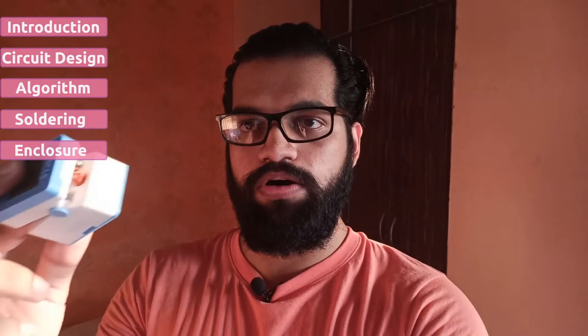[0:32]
In this video, we will see how an oximeter can be made. I have made an oximeter here. It has a display. It has a battery compartment. It has a standard oximeter.
In this video, I will discuss how it can be made. I will discuss the whole process: the circuit design, how you can create an enclosure, and how the algorithm works.
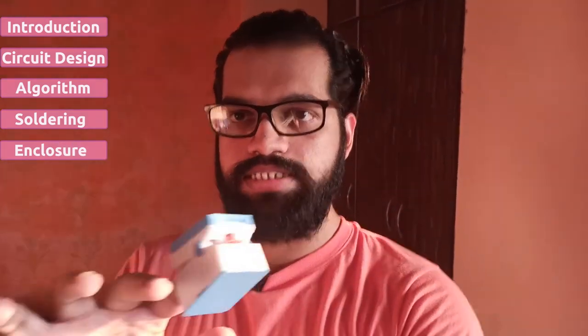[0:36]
In this design, I have not used any specific sensor. The oximeter sensor is just a photodiode. After that, there are stages. The signal will be cleaned and amplified.
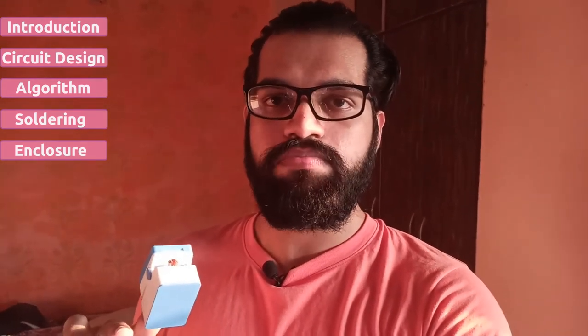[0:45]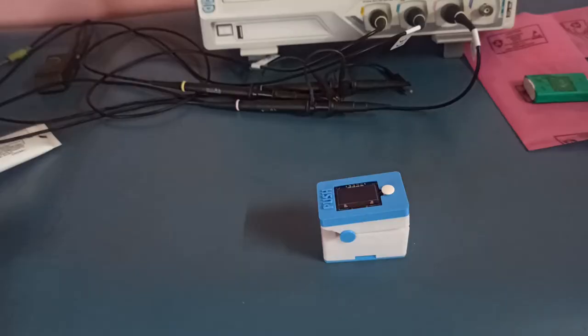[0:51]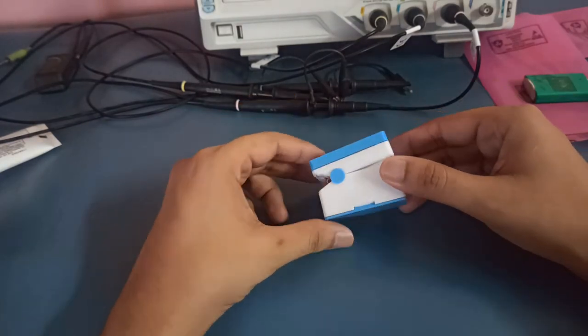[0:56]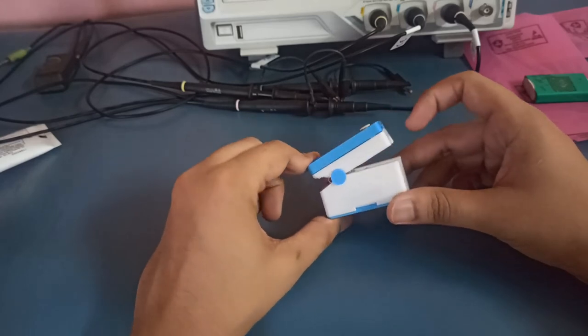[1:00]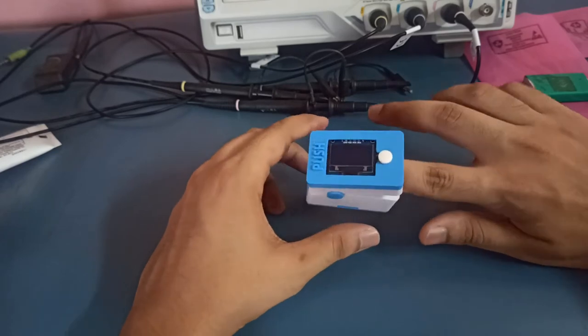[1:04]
Before I move on, I will show you a demo of how the device works. First of all, I will insert my finger. There is a small spring mechanism. I will insert my finger inside.
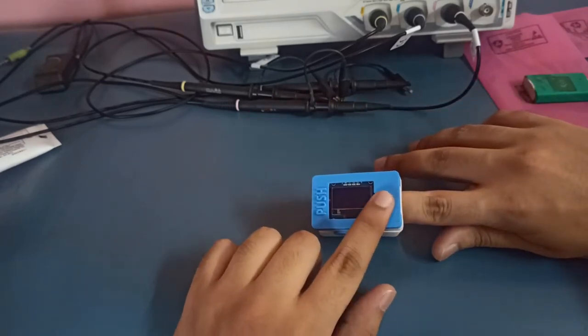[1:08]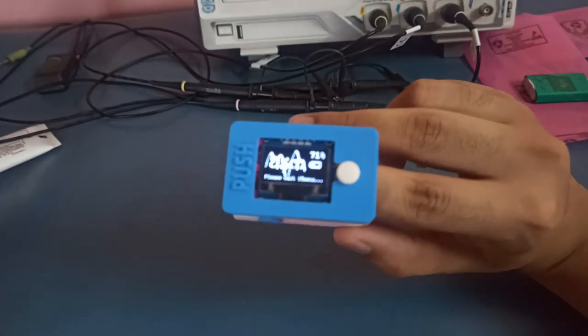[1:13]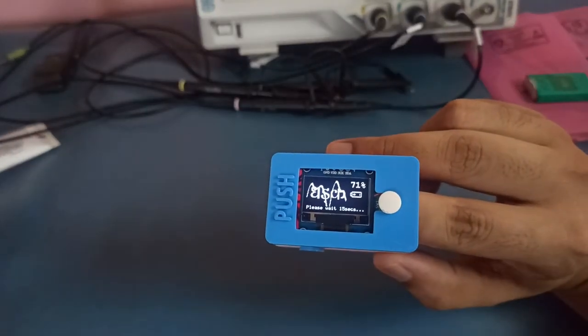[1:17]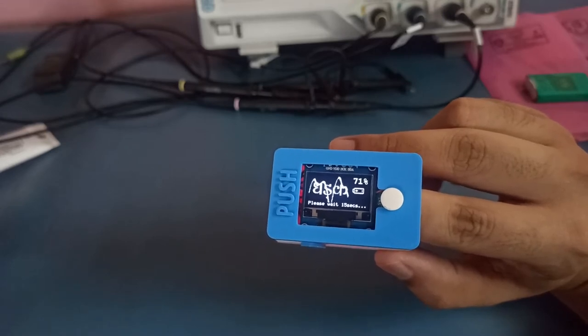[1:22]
Now I will press the power button. First of all, you can see the project name. The project name is Dharak. The battery percentage is 71%. Below there is a message, because it will take a value in 10-15 seconds.
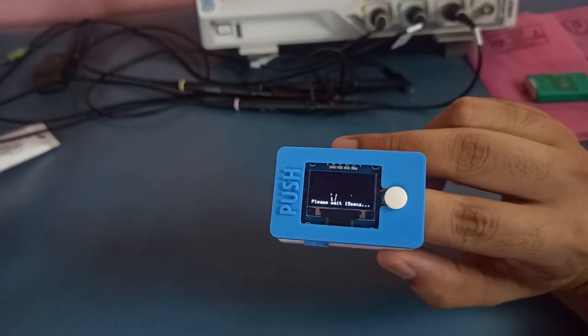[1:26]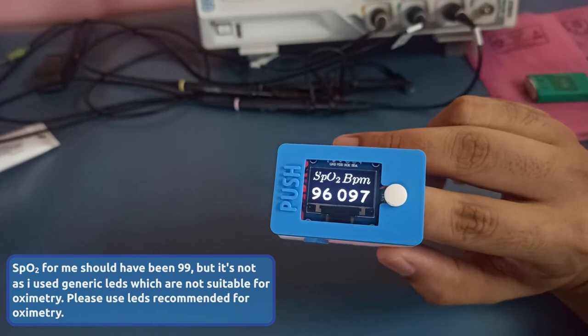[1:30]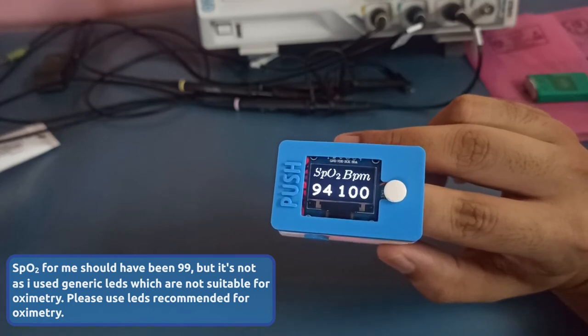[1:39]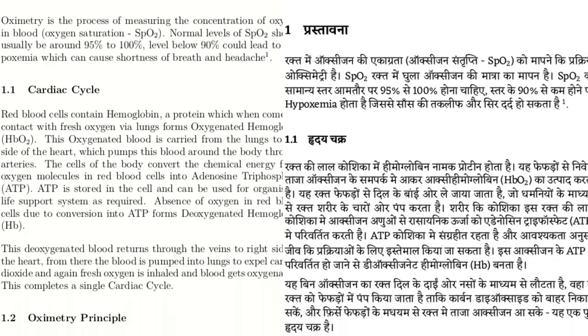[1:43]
First of all, I will adjust the LED to my finger. So, these values have come to us: SpO2 and BPM. As you can see. I will also prepare the whole documentation of this project.
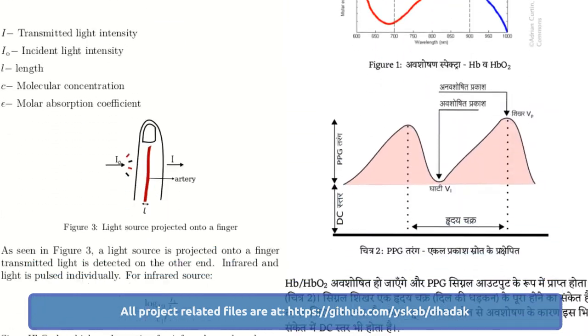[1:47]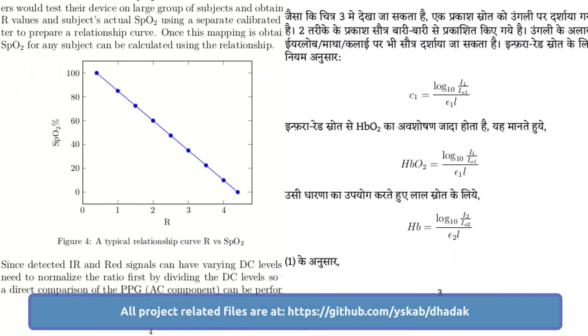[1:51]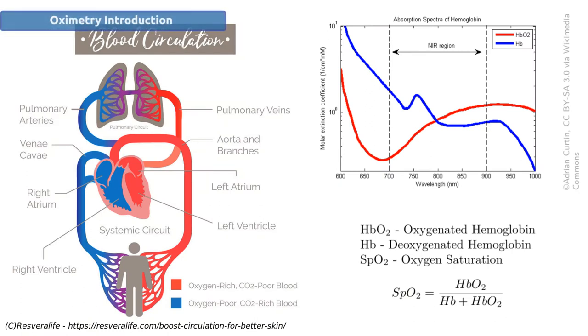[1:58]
Okay, let's start. First of all, I will give an introduction, an overview. What is happening in our body?
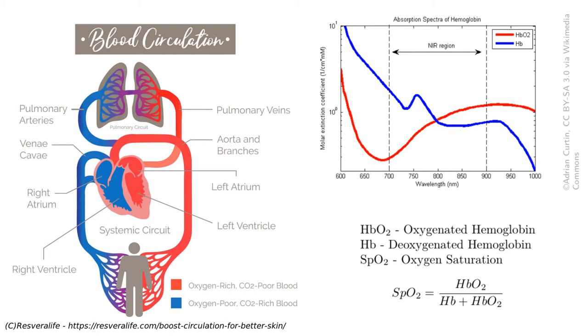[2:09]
In our body, we have a cardiac cycle, in the heart and lungs. What happens in this? We take in oxygen in the lungs. It will diffuse into the blood. It will become oxygenated hemoglobin, as the oxygen binds to it. The heart will pump it to the body.
So the body functions can use all the fresh blood. The oxygen is used by the body, so it will become deoxygenated hemoglobin, because the oxygen is gone from hemoglobin. So these are two processes in the cardiac cycle, in the heart and lungs.
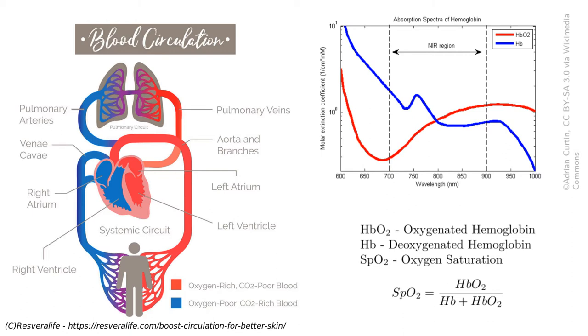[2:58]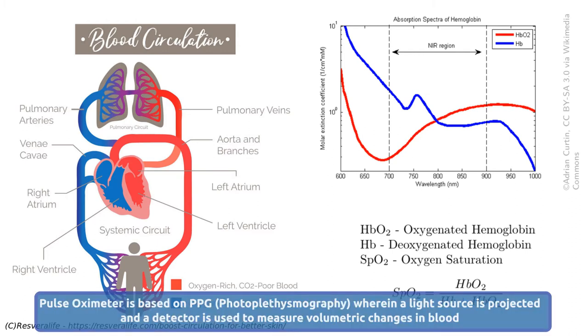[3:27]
So what is oxygen saturation? The oxygen saturation will simply be HbO2 divided by Hb plus HbO2, which means the oxygenated component divided by the total components. So this is how to measure it. The question is, how will we get it directly? These are concentrations, so they are not convenient. So there is a technique called photoplethysmography.
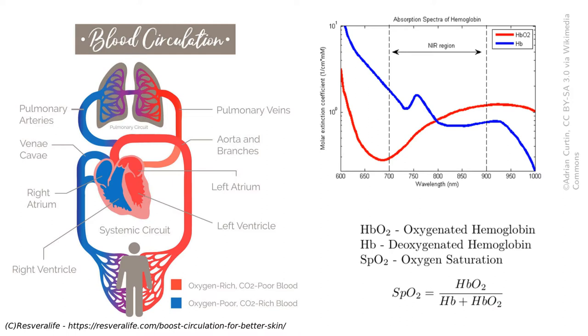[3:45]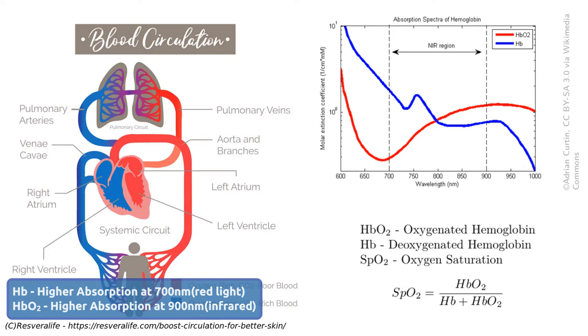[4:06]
What can be done? It can project a light source on a finger, and on the other side, we get a response. We have discovered that HbO2, oxygenated hemoglobin, absorbs more infrared wavelength. As you can see in the graph, the red color is the spectrum of HbO2. If I pass infrared wavelength, then I will get a little less output, because it will absorb it.
Similarly, red is about 700 nm. If I pass red light, then I will get a little less output, because it will absorb it. So now we have to know these two things. We can derive a relation from them, which we can relate to SpO2. That means we can measure only the intensity of the output.
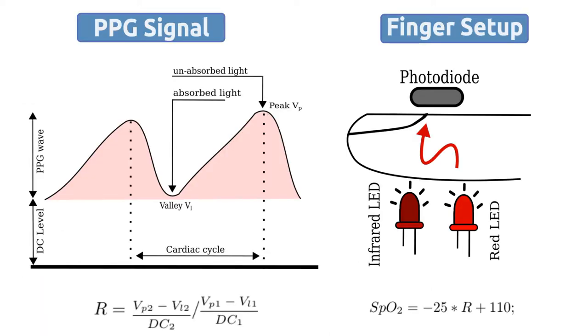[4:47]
I will show you the final relation. The whole derivation will be found in my document. The final result is this. You can see the PPG signal. This is like a mountain. There are some peak points and some valley points. Wherever the peak is, the intensity is not absorbed. It has passed. And wherever the valley comes, there is absorption. That's why the detected intensity of the output is less. When it comes out in the final form, the R is shown here. Basically, the peak and valley points are the ratio of red and infrared. The above component is red.
It is red. It is infrared. So in PPG signals, there is a little DC level. So we will include that in the formula so that we can normalize both. So the ratio is simply red intensity to infrared intensity.
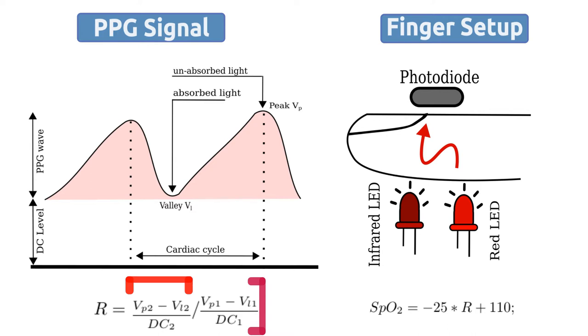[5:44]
And when we use the SpO2 to derive the formula, this is a typical relationship curve. So if we calculate the R and plug it here, then we will get the final SpO2.
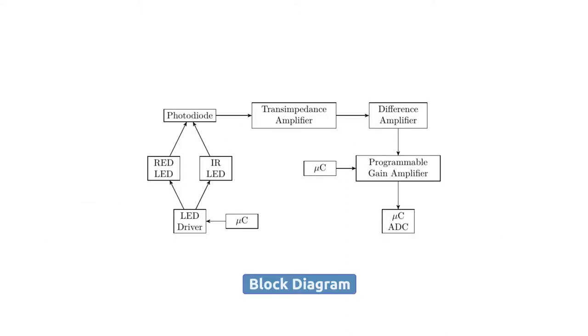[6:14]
And the finger setup, I have shown here diagrammatically. The LED will emit light from one side, and the other side will detect. And all this is detected with the photodiode, and the other side will be shown here. So we have seen the overview and formulas.
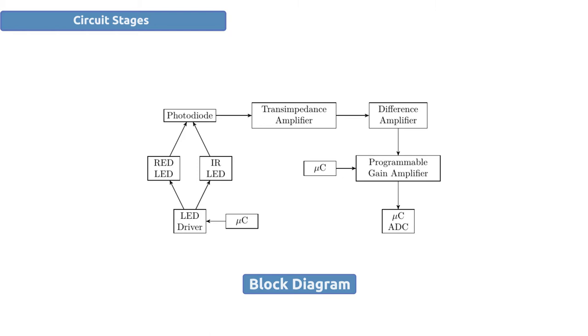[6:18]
Now let's talk about the circuit stages. So here we have a block diagram. This is the design block diagram. So if we start from the left, what is the microcontroller? It will instruct the LED driver circuit to set the intensity of the LED. So you set the appropriate voltage to the LED driver. The two red and infrared LEDs will be on.
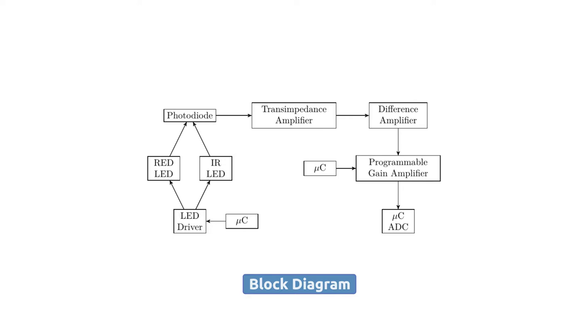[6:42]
The intensity of the LED driver will be set. Now the LED is on. The light will reach the other side, the right side. The photodiode will convert the light into current. And the current will be converted to voltage. It is called a Transimpedance amplifier.
When it is done, it will convert the current to voltage. Now it goes to a difference amplifier. I will discuss this later, but basically we need to remove the DC level from the signal. Once we remove the DC component, the AC component can be further amplified. That is the use and I will discuss that later.
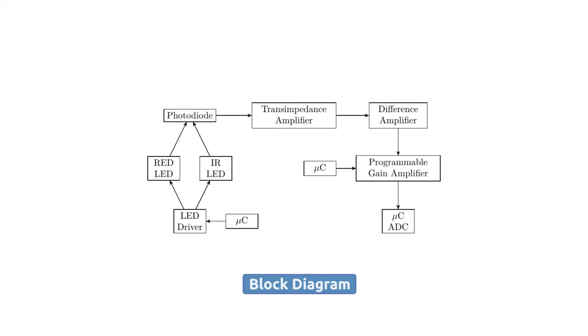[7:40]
Now we have an amplification stage, a Programmable Gain Amplifier. We can instruct the microcontroller to set which gain we need. The gain will be set and the AC component will be amplified. Finally, the ADC will read the digital signal. Then we will implement a formula in the microcontroller to calculate SpO2. This is the entire block diagram and design.
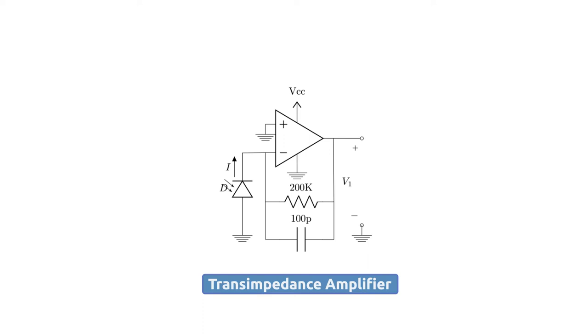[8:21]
Now let's look at individual stages. First of all, we have the Transimpedance Amplifier. First of all, we have the photodiode on the finger. The LEDs will shine light and the photodiode will convert the intensities to current. But we need a voltage instead of current, so we can read the voltage with the microcontroller and know how much its level is. I will discuss the purpose of this.
This is a simple op-amp in Transimpedance Configuration. This is simply the photodiode. Then there will be current. And the op-amp property is virtual ground. So the current flows through the 200k resistor. So the output is simply I times 200k. And that gives the voltage. And there is a capacitor that will work as a low-pass filter.
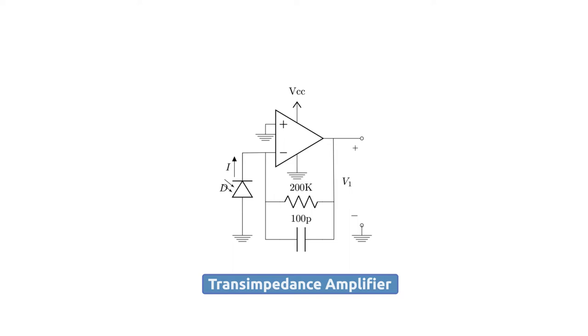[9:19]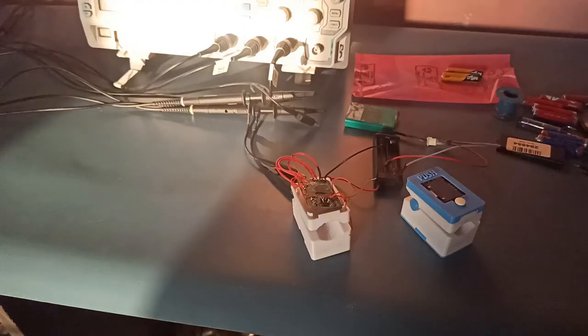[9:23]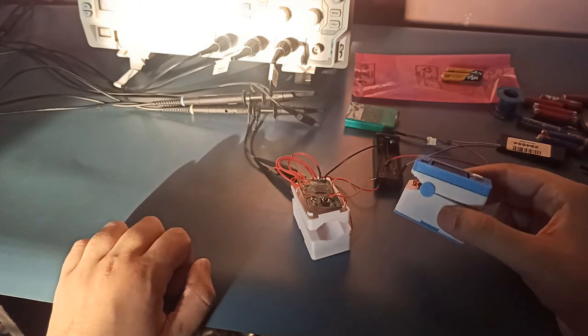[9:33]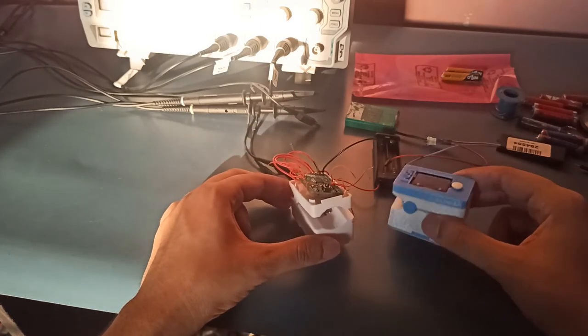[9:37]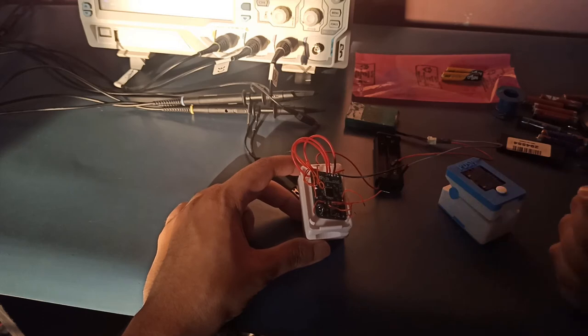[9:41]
So now let's look at the oscilloscope. So I am on the bench. Before we show the oscilloscope, I will show the test device. This is the final device. This is the completed version. And this is the test device. It is the same copy. Here I have removed wires so the traces can be easy to reach and easy for debugging.
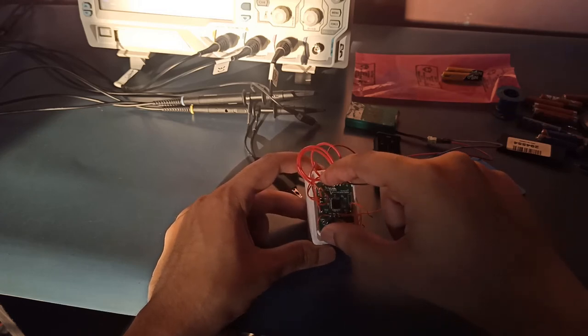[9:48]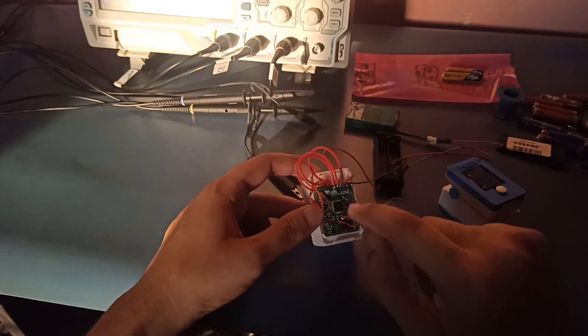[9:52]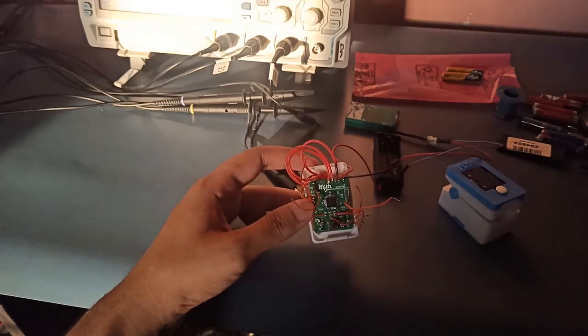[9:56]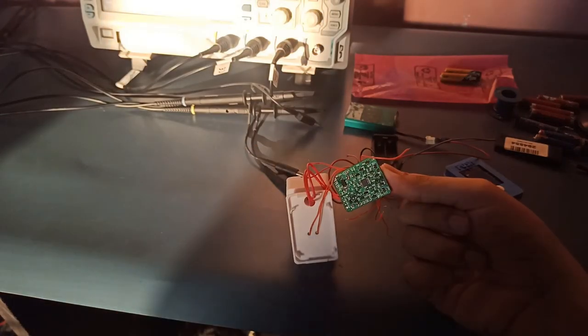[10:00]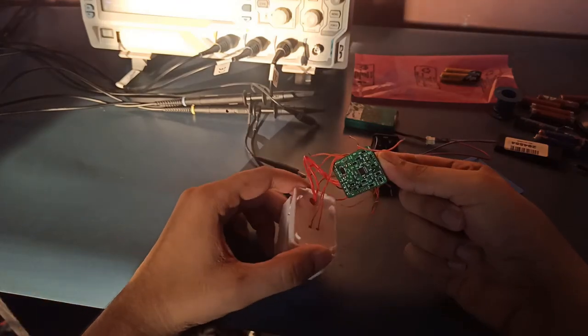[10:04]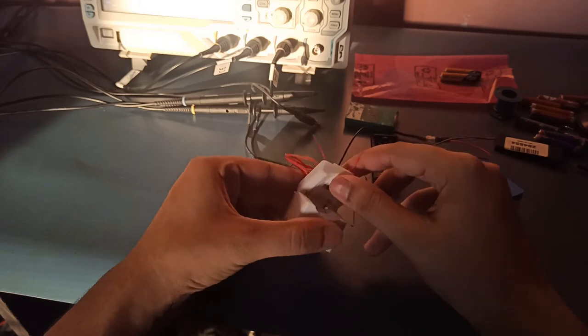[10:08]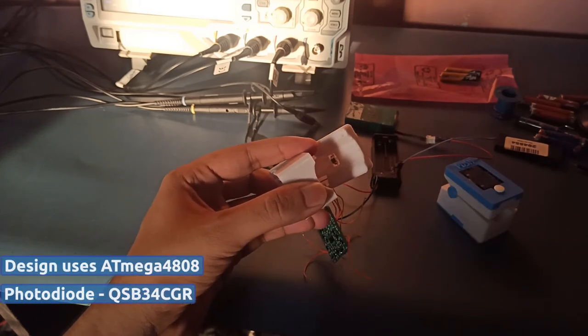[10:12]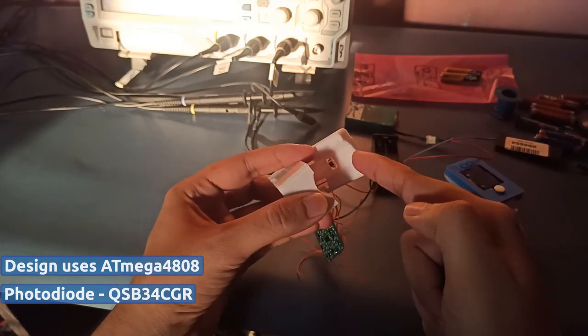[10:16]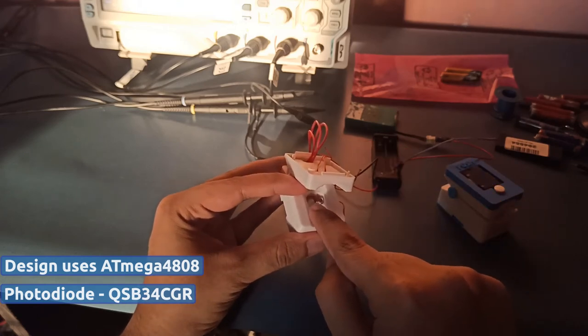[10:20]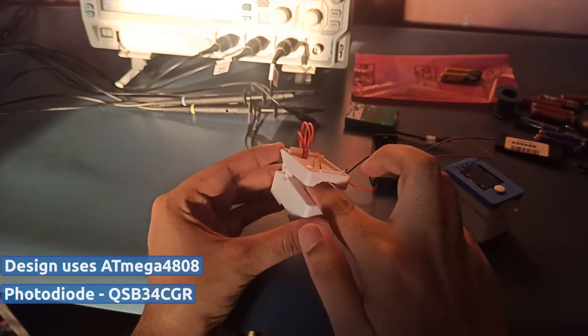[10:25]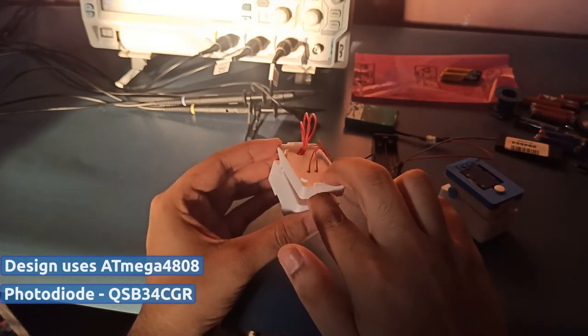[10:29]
So this is the PCB. This is the upper compartment. There is a 4808 microcontroller. This is the power on-off button. And on the back side, the other electronics are on the PCB. So in the enclosure, there is a photodiode on the back side. This is the photodiode sensor. And the LEDs are below. So here are the infrared LEDs. And the finger of course, so here is our finger. And then the enclosure will clip tight.
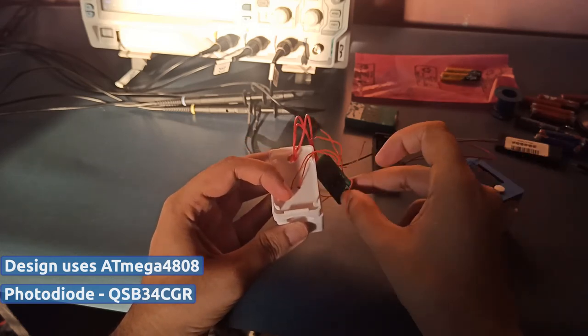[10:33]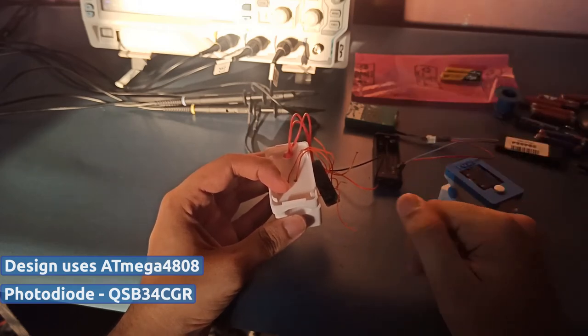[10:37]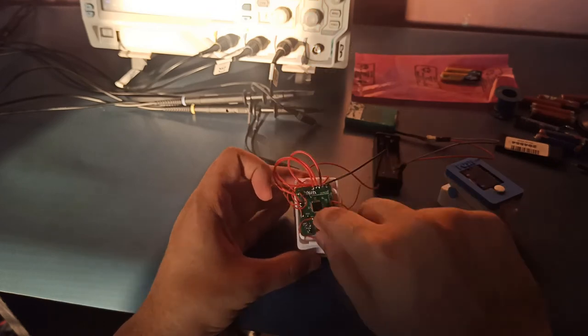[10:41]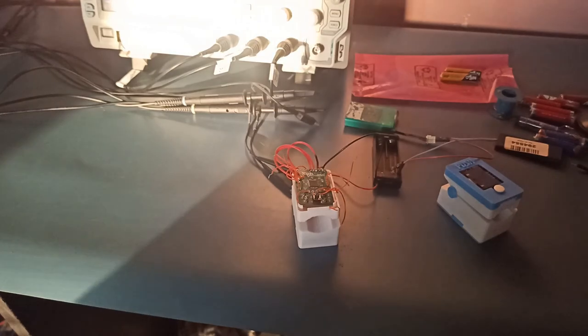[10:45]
So here is the test circuit. And here is a battery compartment. So I will test the batteries. I will test the whole design. So this is the test device. I will connect it to a probe and oscilloscope. I will test the output. Okay.
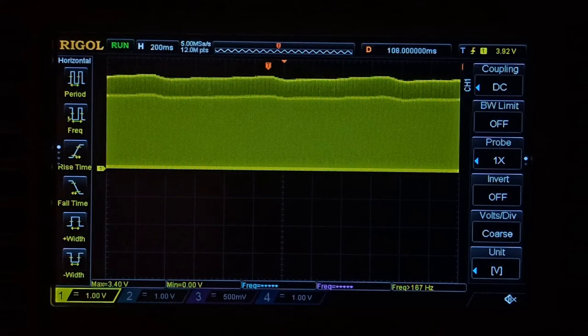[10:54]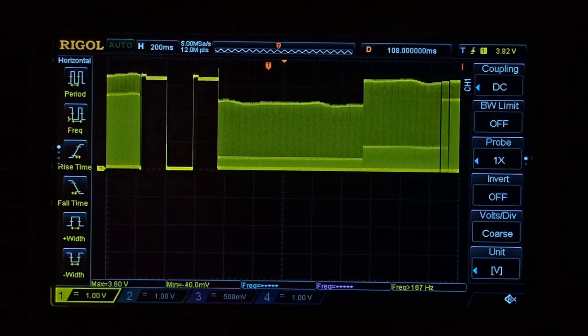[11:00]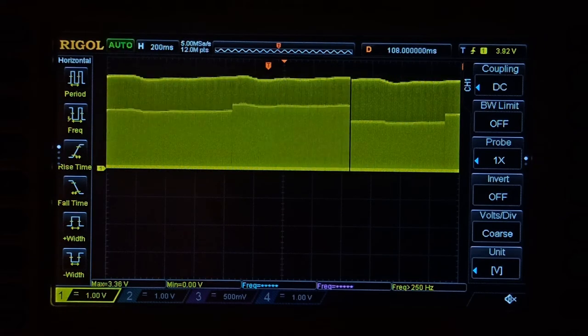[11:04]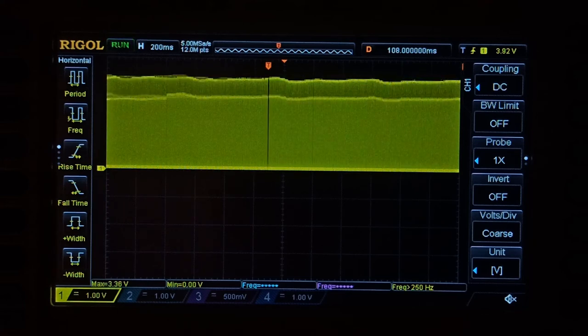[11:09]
So I have turned on the circuit. I will reset the circuit. I will place my finger. So you can see that the level is rising. So this is the algorithm in the microcontroller. It will adjust the intensity for each finger.
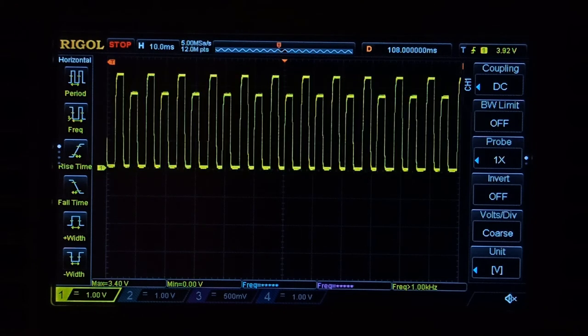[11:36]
So the response will increase. So this is the PPG waveform. I will stop the capture. Now I will zoom in. You can see that.
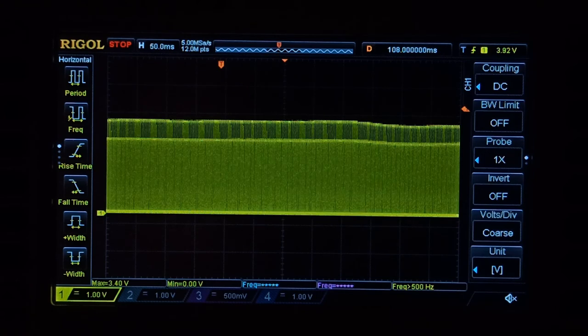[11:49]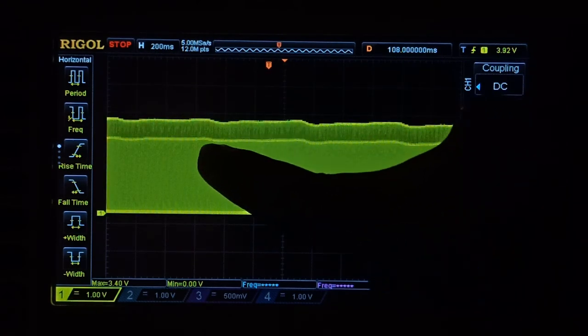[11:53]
This is the square wave. This whole waveform is created because my LEDs are doing the movements. They are literally on or off. This is why it is a square wave type waveform. And this is our PPG waveform.
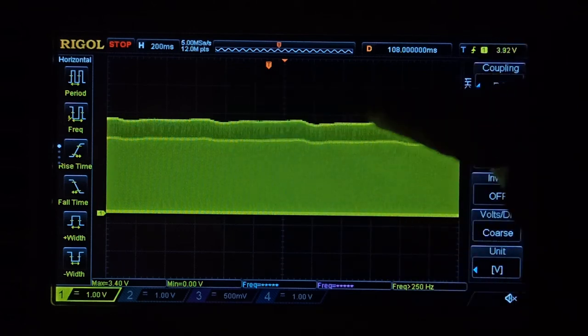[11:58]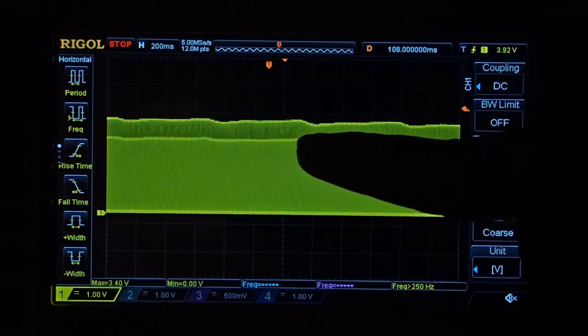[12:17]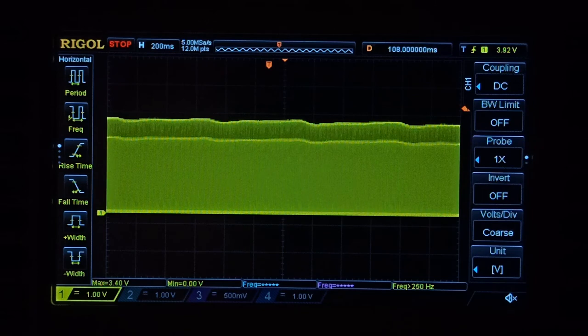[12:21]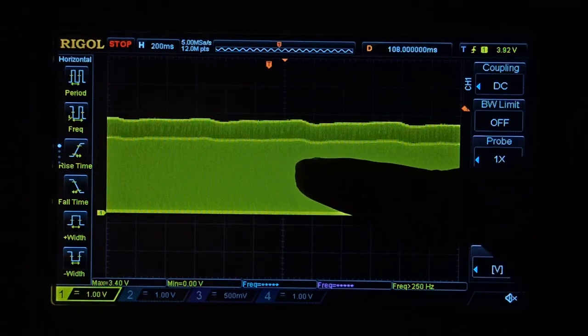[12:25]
So, the infrared response is good, because the infrared is more penetrating through the skin. The red response is good too. But in both waveforms, the PPG signal is visible. The AC component is visible. As you can see, it is visible down to its valley point.
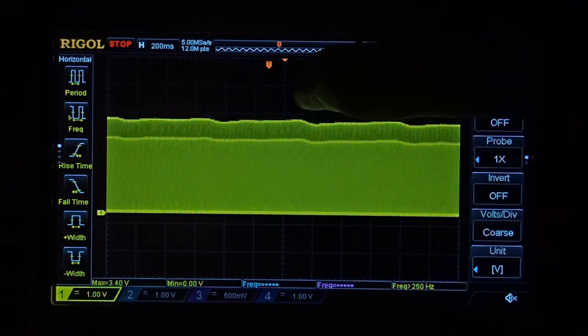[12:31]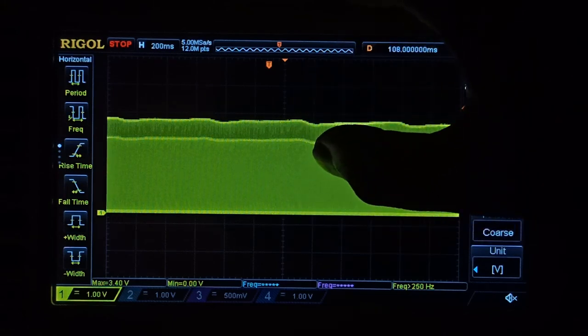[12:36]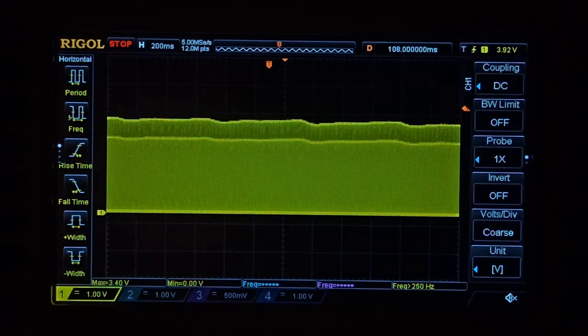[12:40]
So, it is a valley point and it is a peak. And the ground is the DC level. So, this is our transimpedance amplifier output. And we can see the heartbeat here. So, we can measure it. Because it is a heartbeat, it is the time difference between peaks.
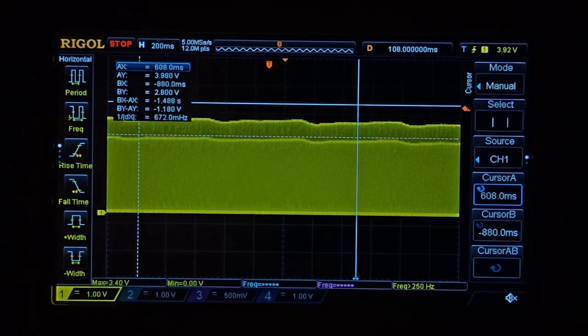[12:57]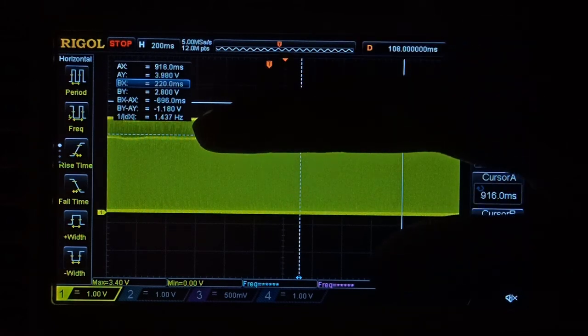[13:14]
So, if I put the cursor on the peak, and the other cursor on the next peak, the time difference gives 1.43 Hz. That is about 80. So, that is my heartbeat.
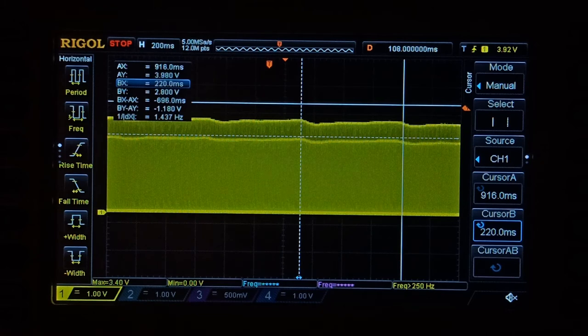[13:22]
So, this heartbeat is our heartbeat. This is the same concept in the algorithm. The algorithm will read the signal and identify the peaks.
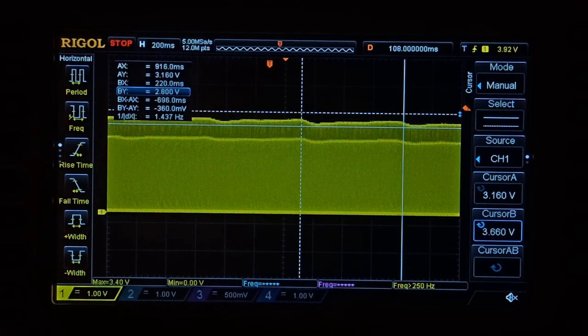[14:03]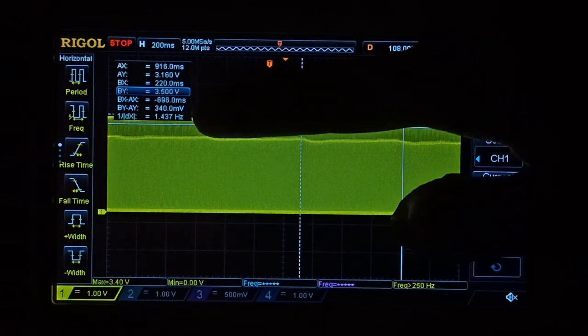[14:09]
Now I will not read the signal directly in the microcontroller because the peak-to-peak levels are very small, about 300mV. The analog-to-digital converter resolution is not good enough, so the digitization is not good and the samples will be a poor approximation.
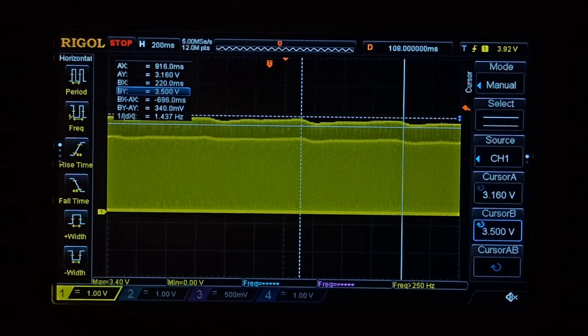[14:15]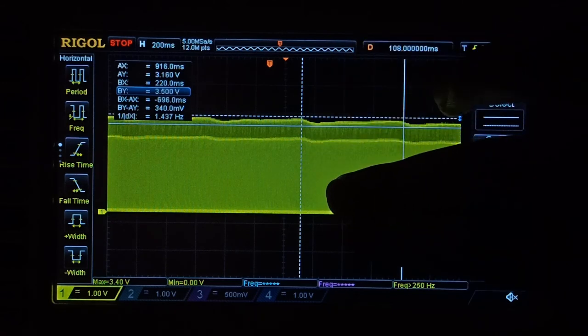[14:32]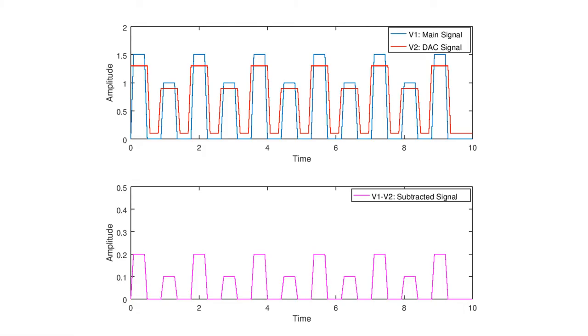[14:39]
We will put an amplifier after this stage. This part will be amplified. The DC doesn't have to be amplified, so we will remove that part. Now we have discussed the I2V stage output. Now we have to amplify the PPG signal so that the microcontroller can read it.
There is a strategy here. We have seen that the PPG signal is a square wave. If we can generate a red signal at the DC level, and subtract it from the max value, then the violet signal will be made. The red signal will go up to the valley point of the PPG signal.
We have seen that the signal is full of DC. That is why the red signal will go to the valley point. When we subtract it, the DC will be removed and the output will be AC. Now we can amplify the AC and read it properly with the microcontroller. This is what we will do in this stage.
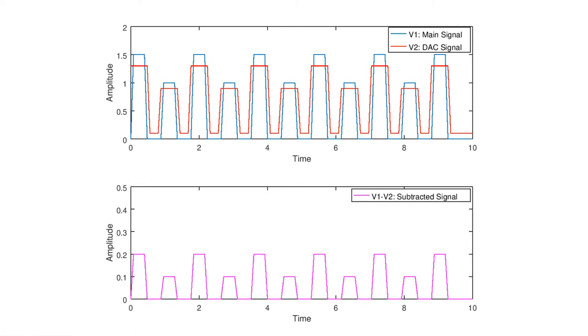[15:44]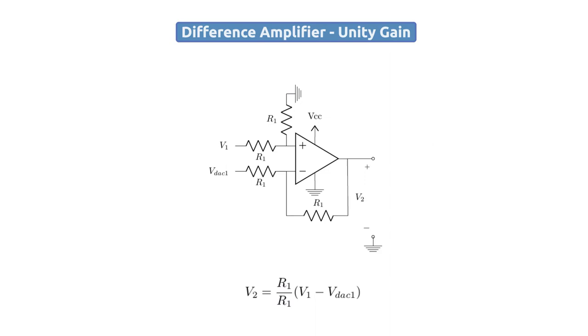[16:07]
The red signal will be generated by a DAC. In the design, there is a digital-to-analog converter. The microcontroller will send a signal to it, and this will generate the red signal. After that, we will send the main signal and the red signal into a difference amplifier. It has unity gain.
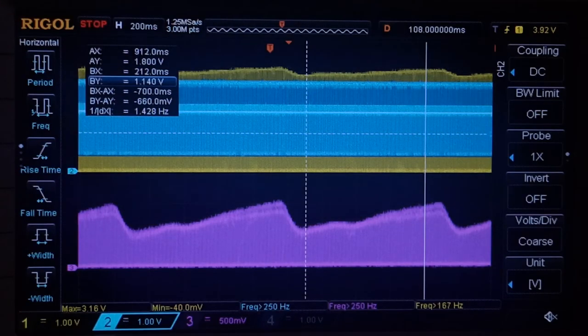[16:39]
This is an oscilloscope trace which I have captured. The yellow waveform is our transimpedance stage output. The blue is our signal that the DAC has generated. And the violet is our difference output.
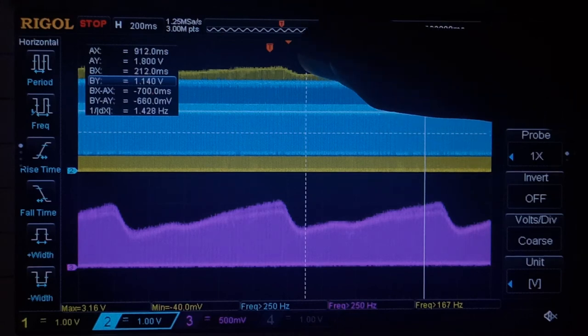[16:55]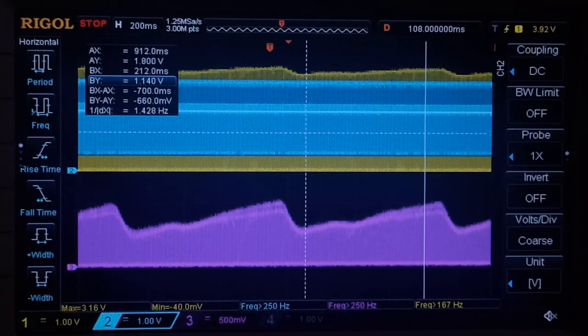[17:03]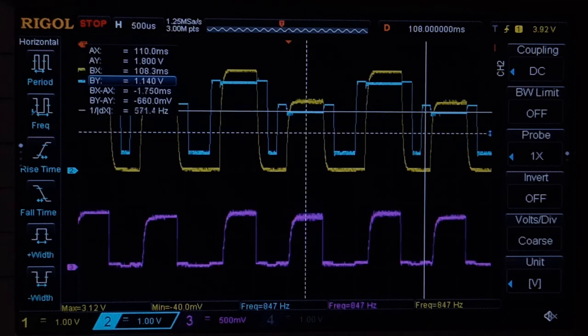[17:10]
Before I zoom in, I will show you. If we see here, the blue signal is just a valley point. It will be generated so that the bottom line will be subtracted, and only the AC part of the valley point will change.
If I zoom in, we can see individually. There is a square wave here. The DAC has generated it, and below it is just the PPG signal, so that the subtraction will change. And below we see the output signal. It is a subtracted signal.
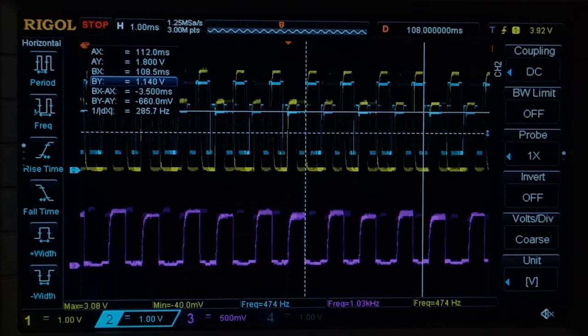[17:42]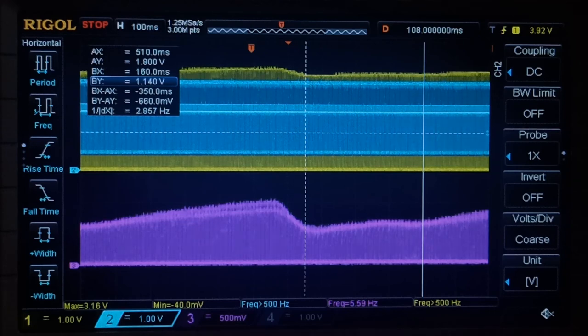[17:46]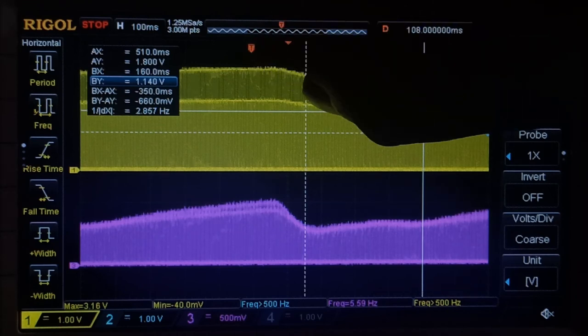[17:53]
So individually, both red and infrared are subtracted. So this is the final output of this stage. Here we can see that the signal is growing. If we compare this signal to our yellow signal and the transimpedance signal, it is growing. So this is the next part.
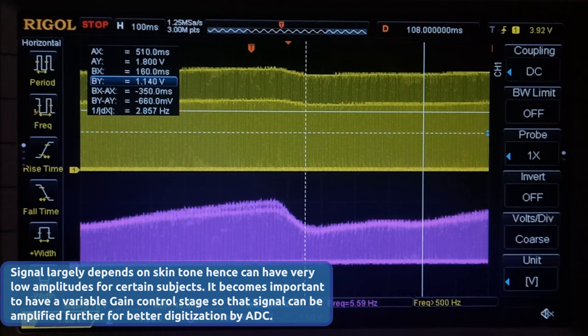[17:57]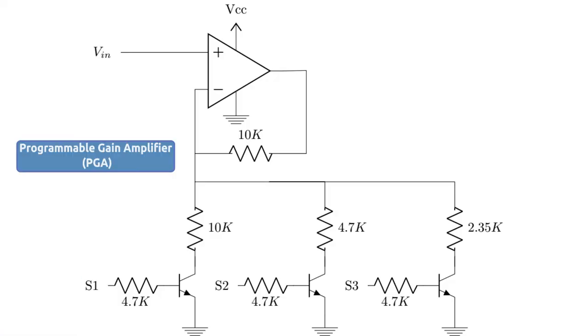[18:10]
So we send this signal to the programmable gain amplifier stage. If we want additional gain, it will get the gain. And finally, the microcontroller will read it. So finally, our programmable gain amplifier stage has come.
Here we can see the input signal from the previous stage. It will go to the op-amp non-inverting terminal. There will be individual resistors, and there will be a transistor that will switch it. Suppose S1 is high, then the S1 transistor will turn on and connect to ground. And the rest of the switches are zero, so they will be off.
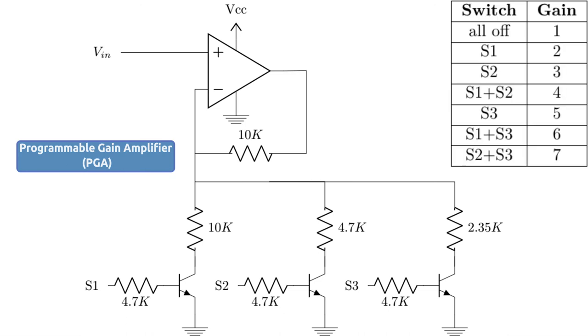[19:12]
So when it becomes a parallel combination, the output will be 10k. So 10k is coming, and the feedback resistor is already 10k. So if we apply the op-amp non-inverting gain formula, then we will get two times gain. The input signal will be doubled, and it will get output. Similarly, if S2 and S3 are high, then we will get different gain values.
So this is a table. When we switch according to this table, we will get additional gain. The microcontroller will decide. We will read the previous stage input to see how much more gain is needed so that the ADC can be utilized. In the design, I have a 1V full scale voltage for the ADC. So if the signal is 300mV, then we know it will be 3x amplified.
So the microcontroller will set the switch high, and that will give the specific gain. This is the whole role of this PGA stage. So this is the final stage. After this, the output goes straight to the microcontroller's ADC input. And we will implement the algorithm to find SpO2 and heart rate.
I will end this video because it has been over 20 minutes. The rest of the parts, like soldering, enclosure design, PCB, KiCad schematics, etc., I will discuss in the next part. Then I will end this part.
And the rest, I want to create topics like this, from starting to finish. I want to create a prototype, an idea. This is a great learning process, because I am also a beginner. I do not know anything, and the process is very difficult. I want to create it and document it.